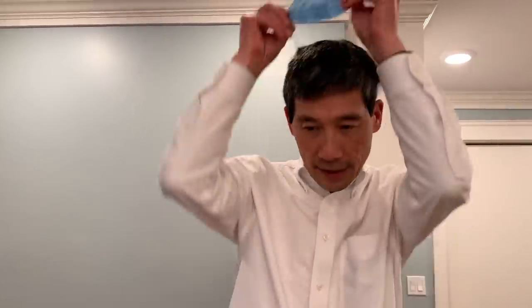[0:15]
In my day job, I'm a surgeon. And as a surgeon, I wear a mask like this. This type of mask protects my patients from my germs. I can use it in the operating room or in clinic. It could be a mask like this or a mask like this. But either way, these masks are to protect my patients from my germs.
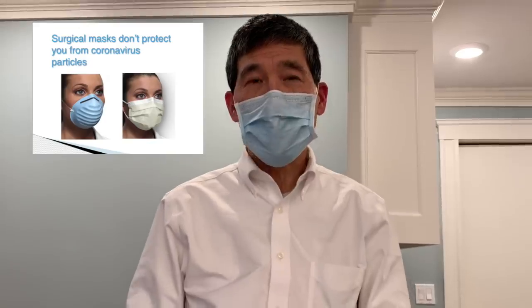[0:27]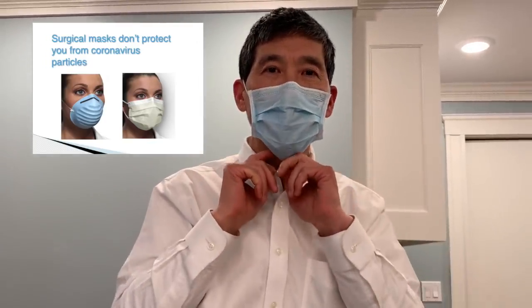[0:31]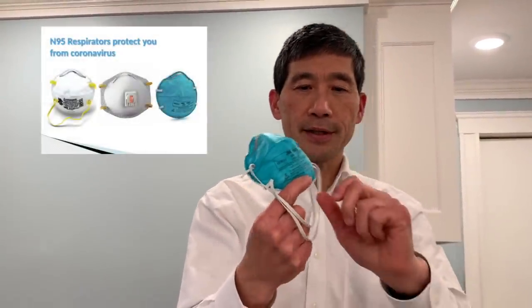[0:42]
This mask will not protect me from coronavirus for two reasons. The first is that there's a lot of air leaking in on the sides of it. And the second is that this isn't any special type of filtering fabric. If you want to protect yourself from coronavirus, you need a respirator like this. This is an N95 respirator.
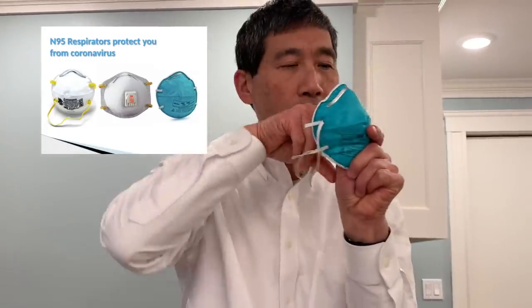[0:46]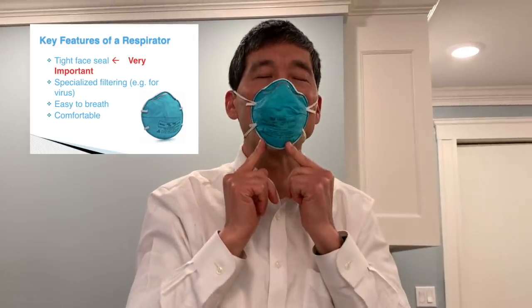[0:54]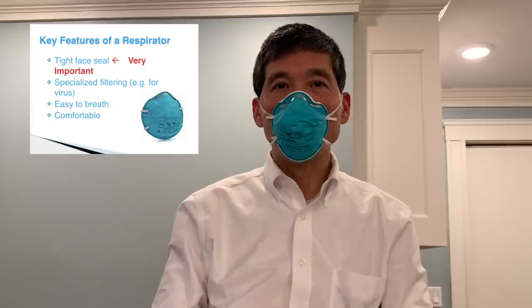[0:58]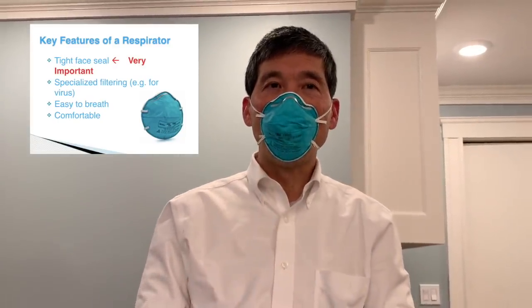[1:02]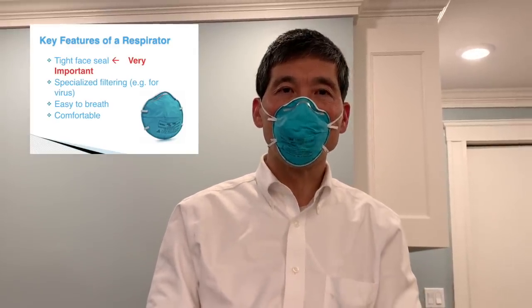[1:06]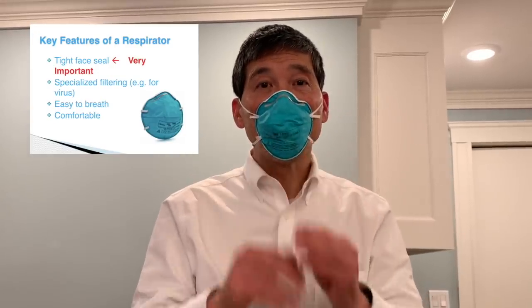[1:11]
There are several key features of a respirator. The first is that it forms a very tight face seal. This is very important. The second important feature is that this is a special fabric. This happens to be rated at N95, meaning that it filters 95% of particles that are 0.3 microns or larger. It's very comfortable, and I can wear it all day long and breathe in it.
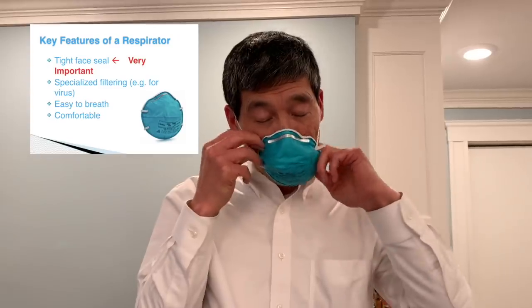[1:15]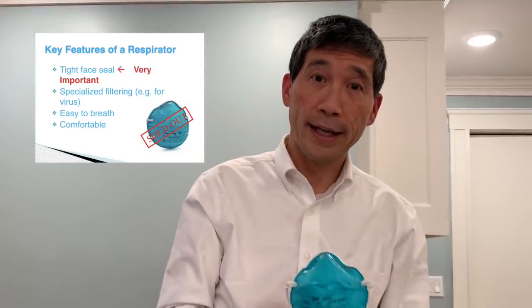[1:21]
What's the problem with an N95 respirator? The problem is that these are sold out. And so if you want to protect yourself with an N95 respirator, you need to figure out how to make your own. So if you want to make yourself an N95 respirator, do it yourself, this video is for you.
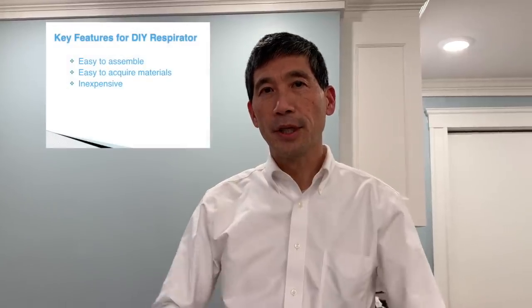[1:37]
The key features of a do-it-yourself N95 respirator are that it has to be easy to assemble, the supplies need to be easy to acquire, and it needs to be inexpensive. Here's a do-it-yourself N95 respirator that makes a tight seal against the face and has a special fabric here that filters 95% of particles, 0.3 microns or larger, and the mask is very comfortable. I'll show you how this is made.
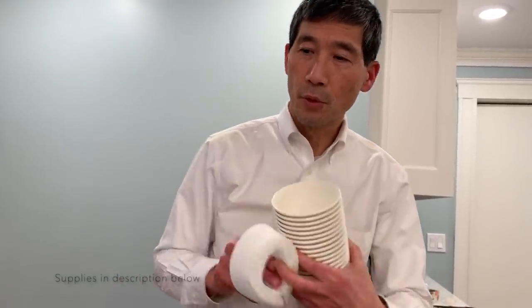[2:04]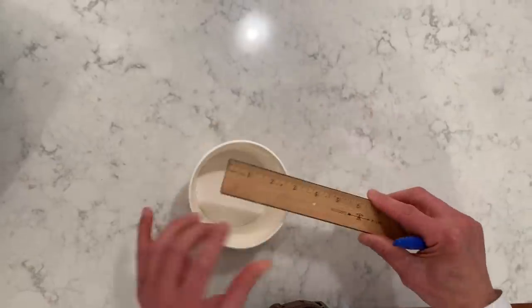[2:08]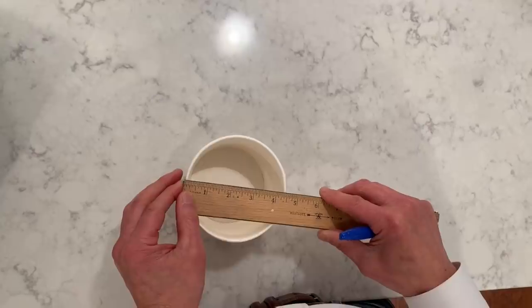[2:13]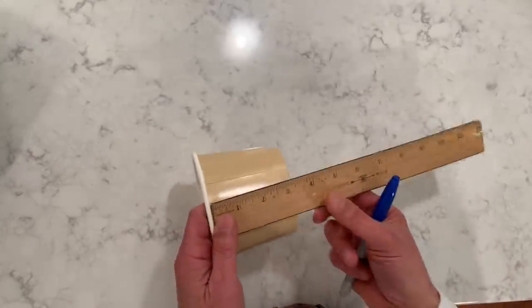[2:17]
The key things that you need for this project are some soup cups, 4 inches in diameter is the best, some foam, and some saran wrap. This is a soup cup. Its diameter is just a little bit larger than 4 inches, about 4.5 inches. And the height of this is about 3.5 inches.
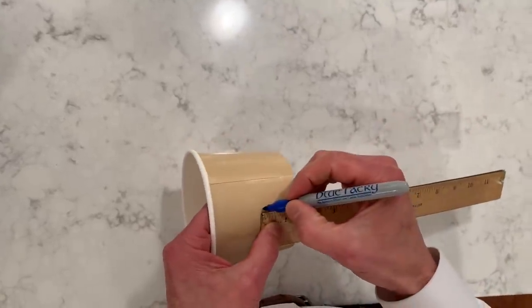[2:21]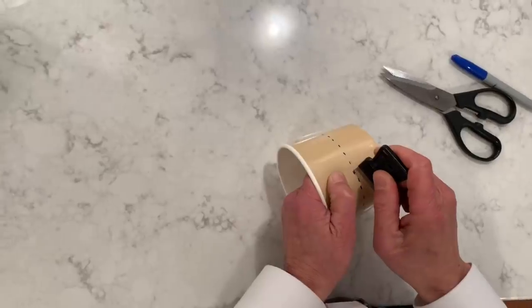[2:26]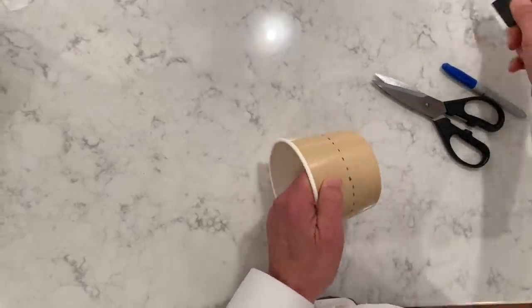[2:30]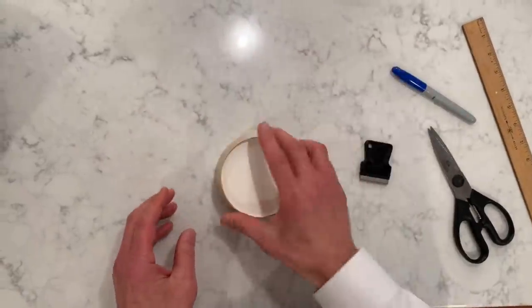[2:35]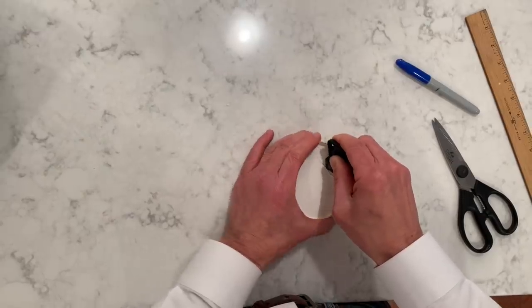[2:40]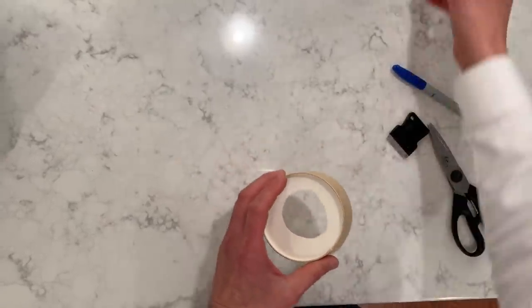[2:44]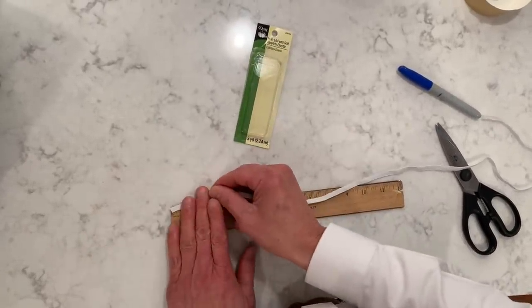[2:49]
It's important to cut it down to only about a 1.5 inch height. So I'm gonna measure 1.5 inches all the way around this cup. And then we'll cut all the way around here. After you've finished cutting, this is the part that you want. We're going to cut out the center portion of this where our filter is going to go, like so.
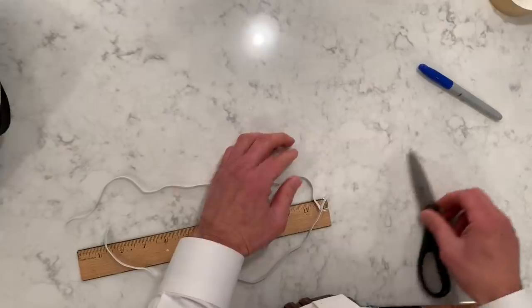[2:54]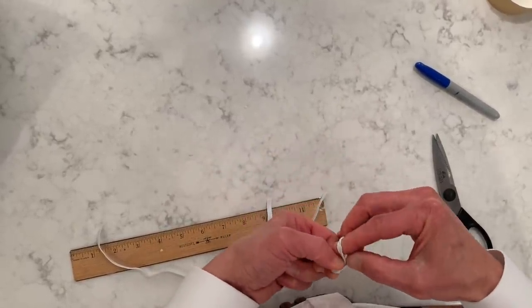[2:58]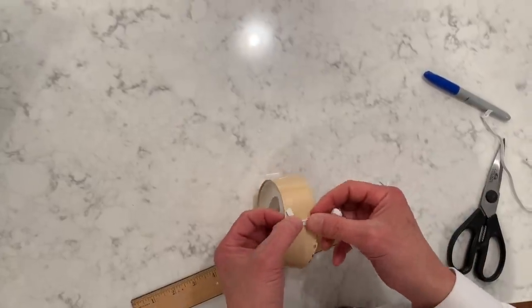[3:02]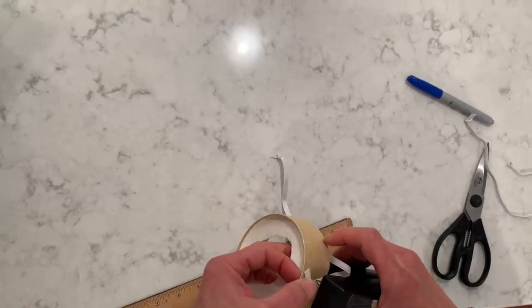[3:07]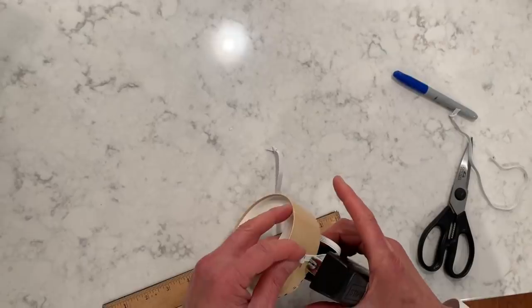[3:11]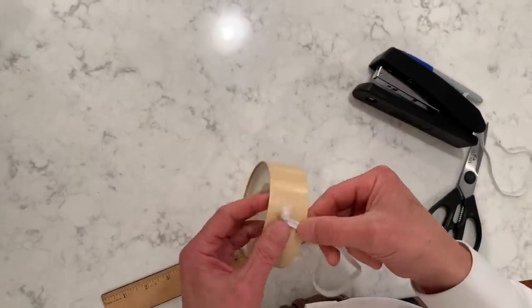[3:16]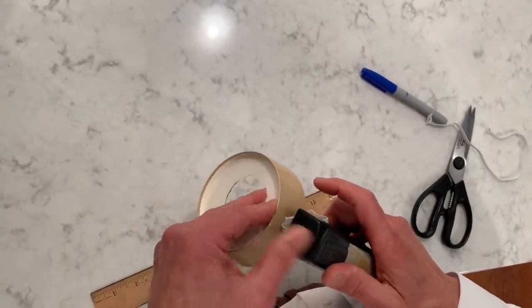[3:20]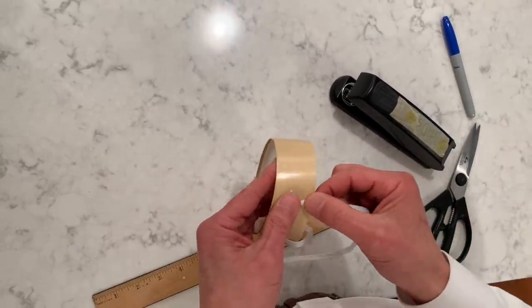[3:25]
Next, we're going to take some 1/4 inch soft stretch elastic fabric and cut about 13 inches. We need to put a knot at the very end of it on both sides. Next, we're gonna secure our straps on here with a stapler. I'd recommend 2 staples. And the bottom strap.
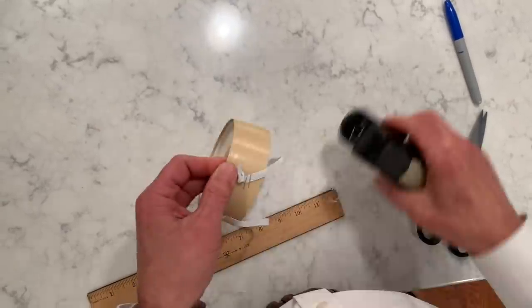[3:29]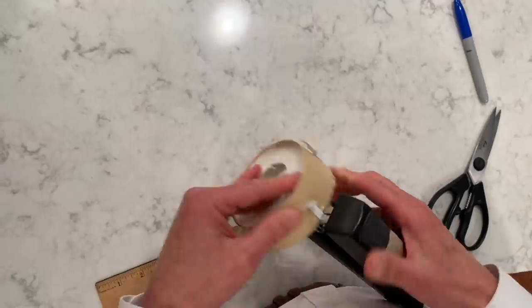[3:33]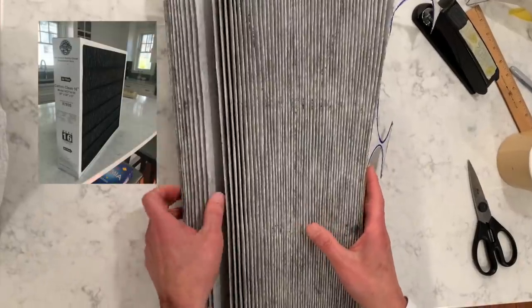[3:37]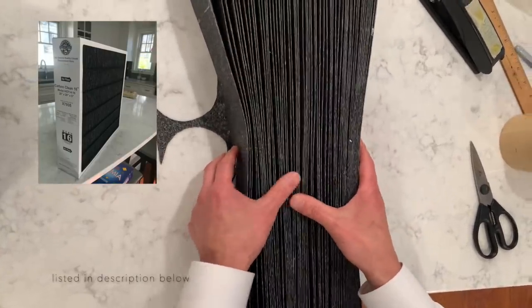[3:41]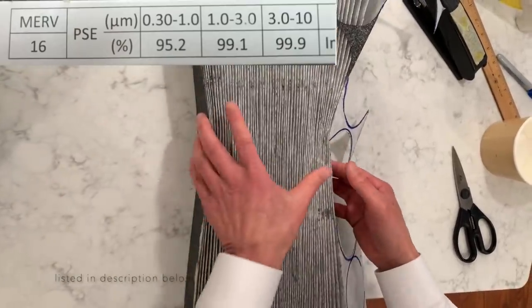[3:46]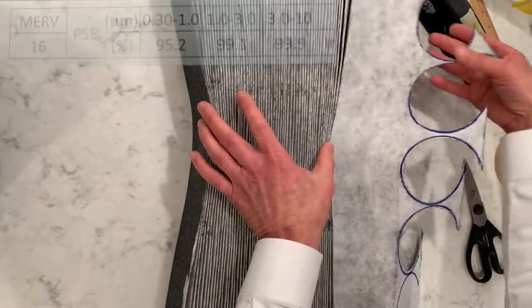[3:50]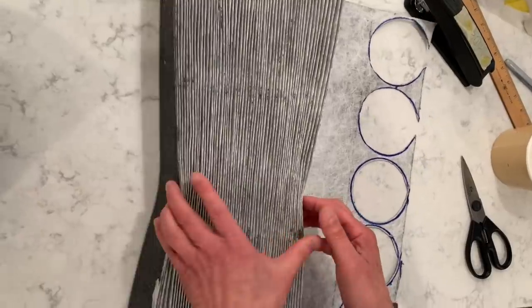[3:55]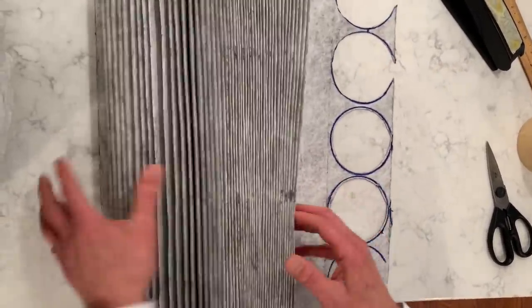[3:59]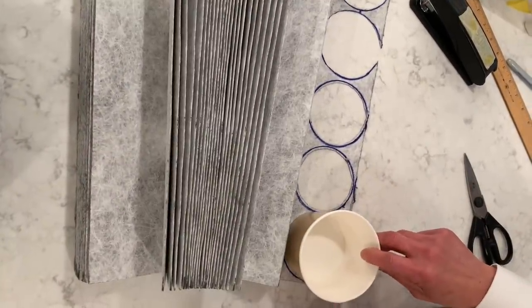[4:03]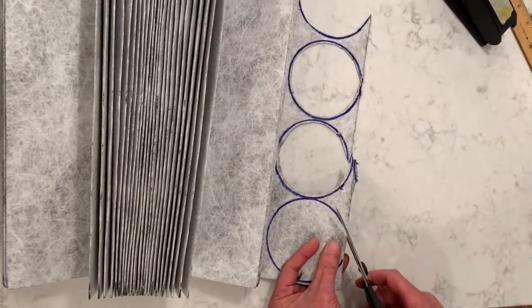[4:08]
Okay, next we're gonna use a filter from HVAC, an air conditioner filter. This is MERV 16, which has the exact same ratings as N95, meaning that it filters 95% of particles, 0.3 microns and larger. Once I've disassembled this filter for an air conditioner, there are so many pleats in it. There's actually 119 pleats in it, and we're gonna cut our filters out of this. You can see I've already made the circle around for the size, and now I'm gonna cut this out.
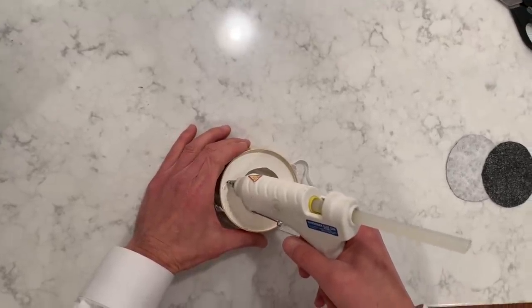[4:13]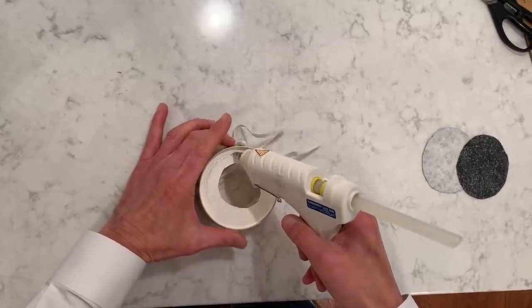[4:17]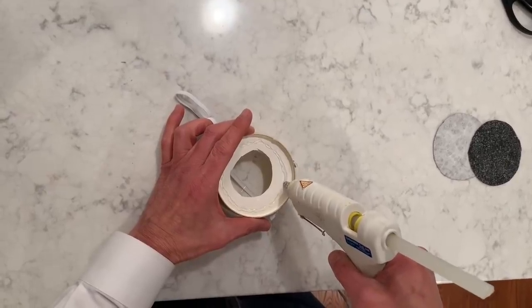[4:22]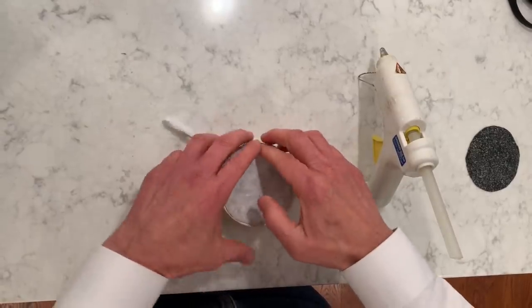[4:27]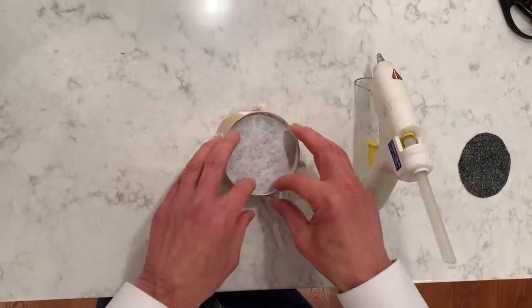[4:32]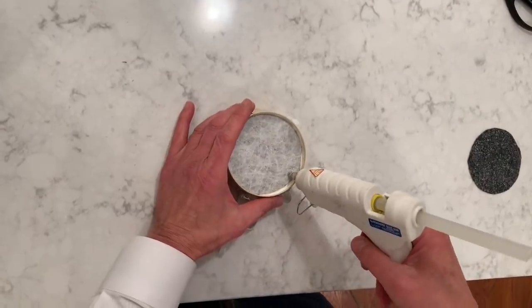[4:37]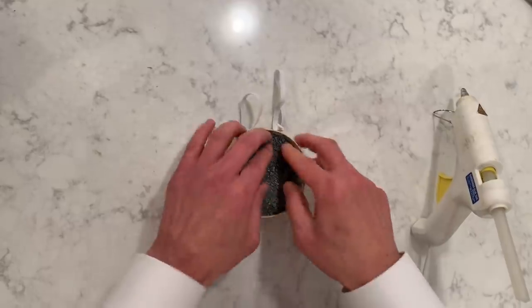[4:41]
Next, we're gonna glue the filter in place. I'm using a hot glue gun here. Liquid glue will also work. It's important that the bead is continuous so that there are no air leaks. Put down the first filter. Now I've got this with the microfiber side up, and one filter would be sufficient. But just to be safe, I'm going to use 2 filters. Second filter. So that's 2 layers of the MERV 16 filter.
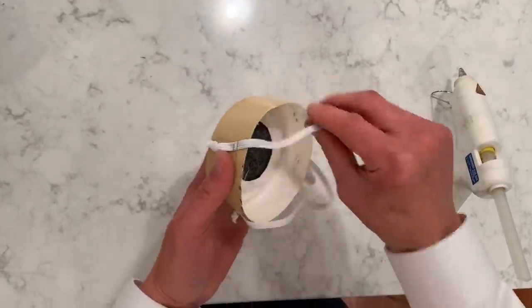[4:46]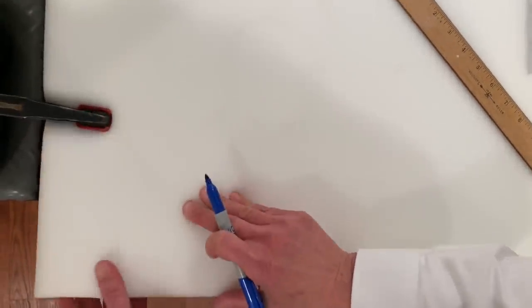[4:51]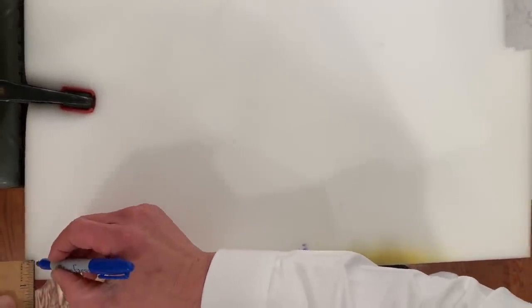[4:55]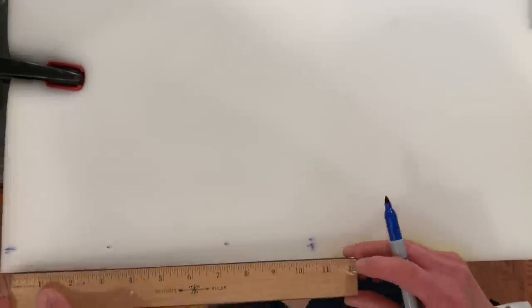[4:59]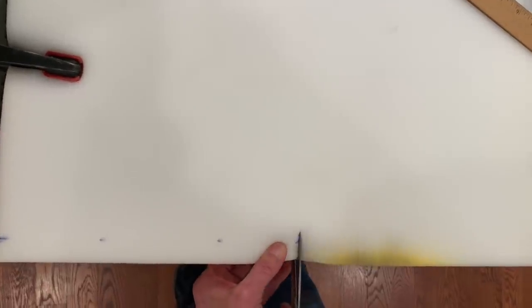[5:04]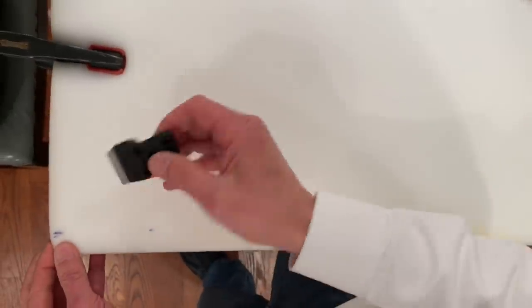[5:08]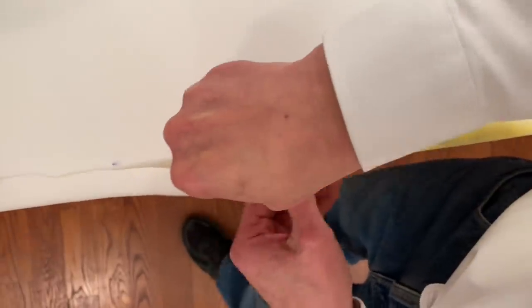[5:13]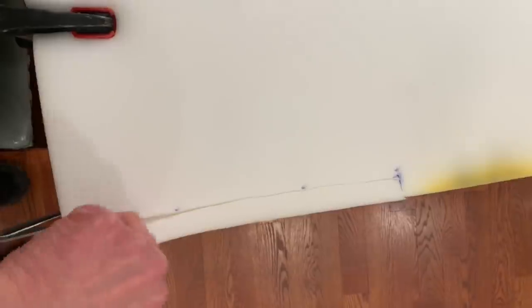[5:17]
The next step is to create the face seal. This is a sheet of 2-inch thickness foam that I got at Home Depot. I'm going to measure a strip here that's 3/4 of an inch wide and needs to be 11 inches long. I cut the end of this here. And then use a razor blade to cut the foam. And once you're down that far, it's easier to use scissors.
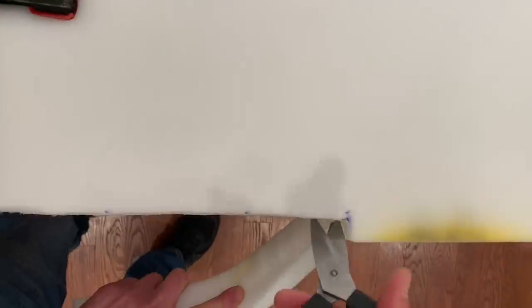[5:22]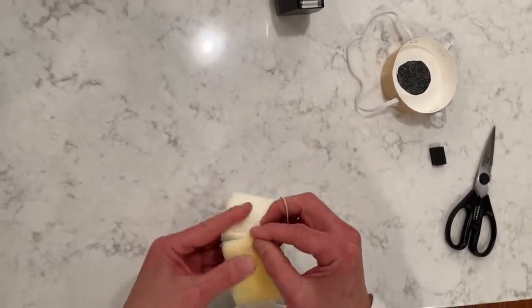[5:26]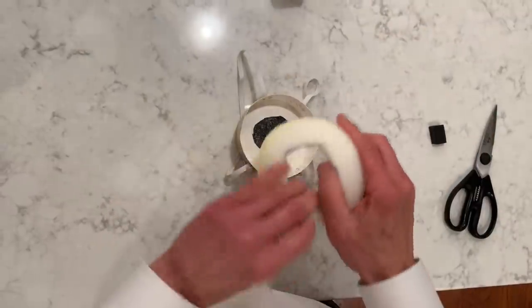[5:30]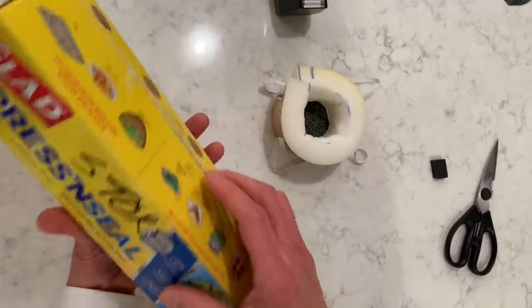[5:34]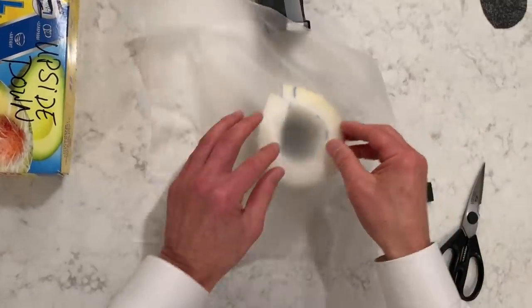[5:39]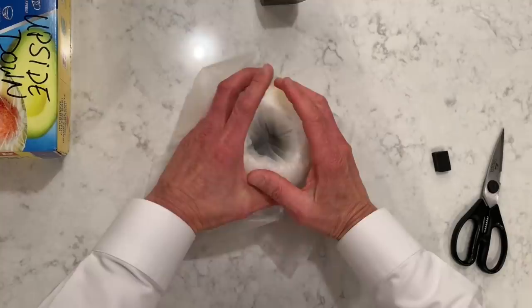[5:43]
Now that you've got your foam cut out, make a circle and hold that circle in place with a rubber band. Go ahead and put it inside of the shell of your respirator. Get a sheet of saran wrap. Place it over. And put it down in the center like that.
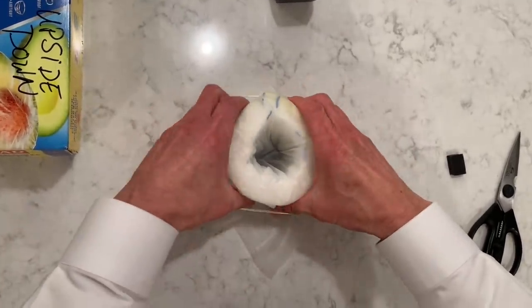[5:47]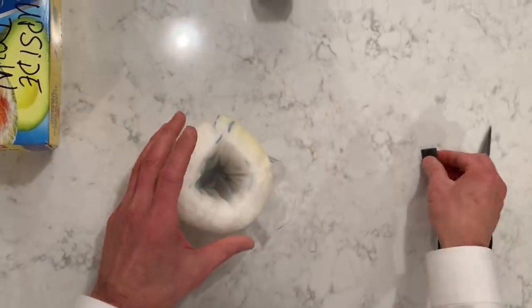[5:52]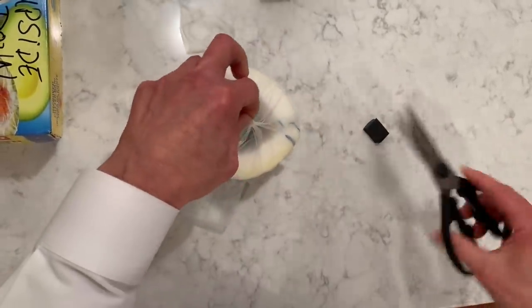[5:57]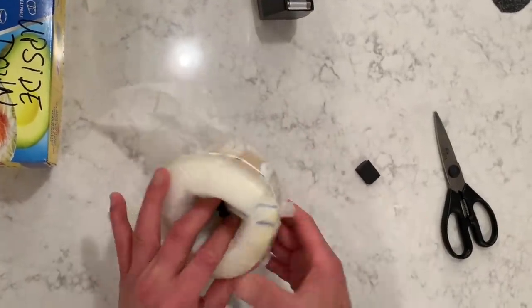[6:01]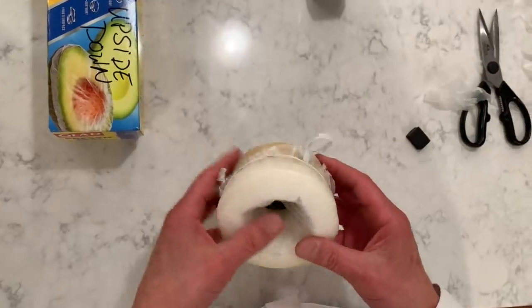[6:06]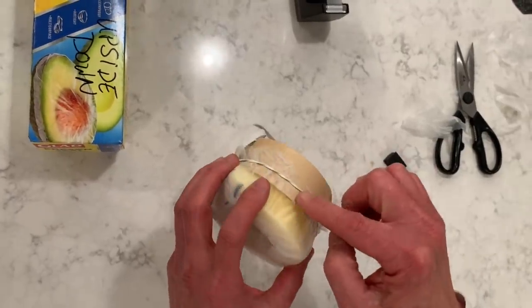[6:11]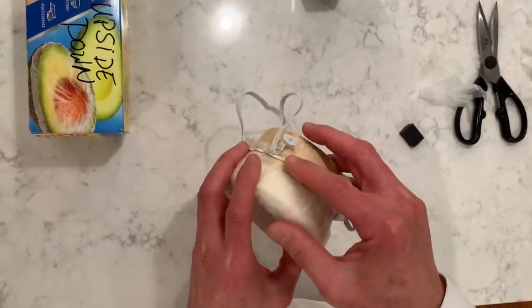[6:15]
And place a rubber band over it. Take the very center of it, cut just a very small hole. Push down. To make it look nice, you can cut off the extra saran wrap. Now that I've cut off the extra saran wrap, I just want to go around and make sure the rubber band is sitting on the saran wrap itself and hasn't rolled down too far. But that's it, that's our completed respirator.
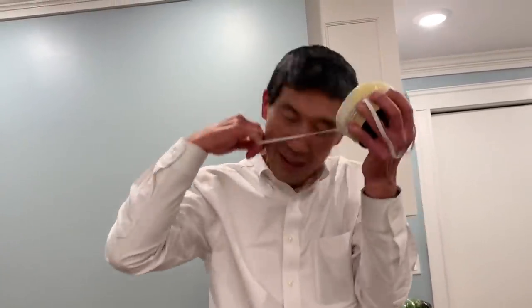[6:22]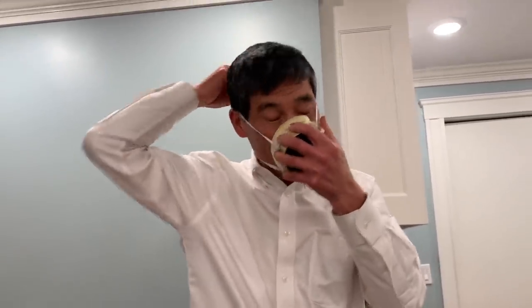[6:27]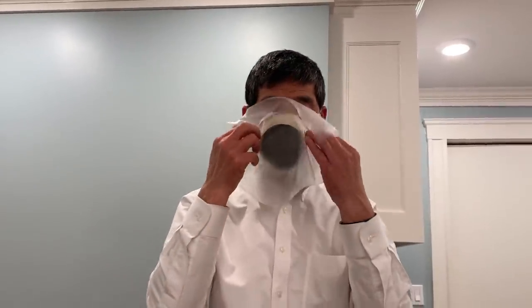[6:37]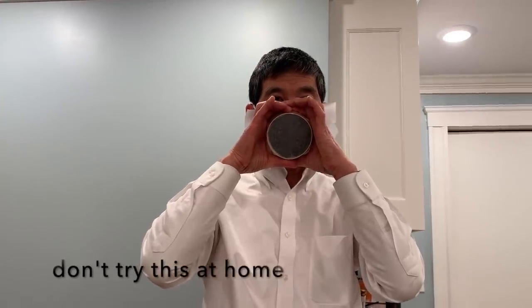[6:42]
Okay, let's go ahead and fit test our respirator here. I'm gonna put it on, get a nice seal against my face. I want to be able to test the seal, so I'm going to get a piece of saran wrap here and put it over the filter side. And I cannot breathe in any air at all. And so I can tell that this is an excellent fit on this respirator with a great seal all the way around.
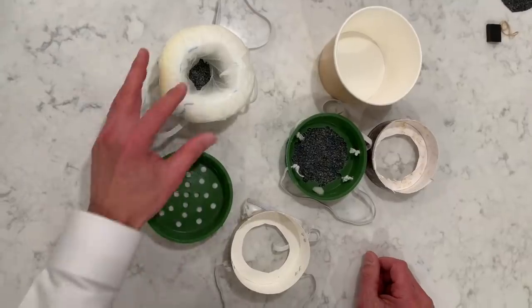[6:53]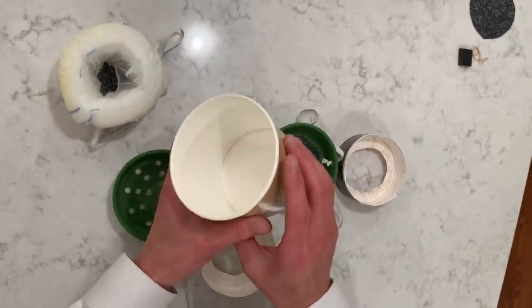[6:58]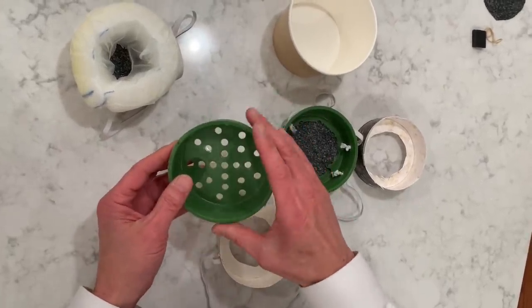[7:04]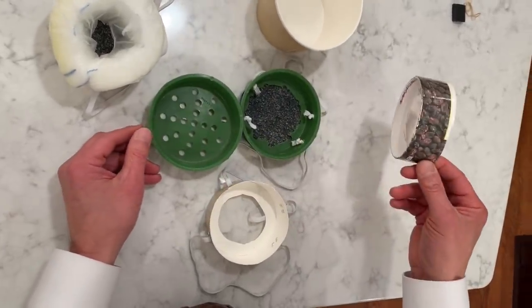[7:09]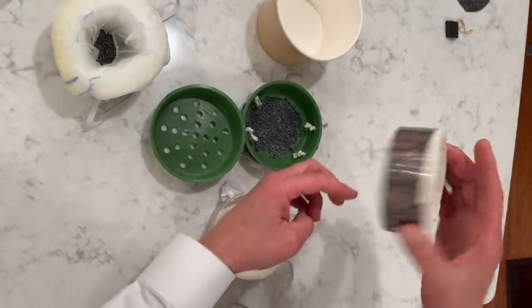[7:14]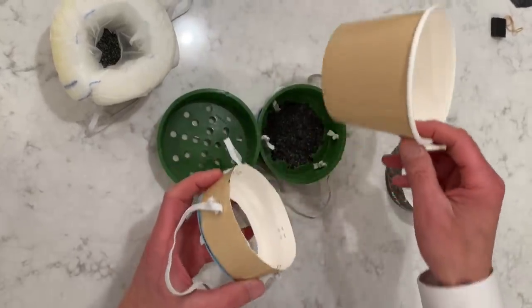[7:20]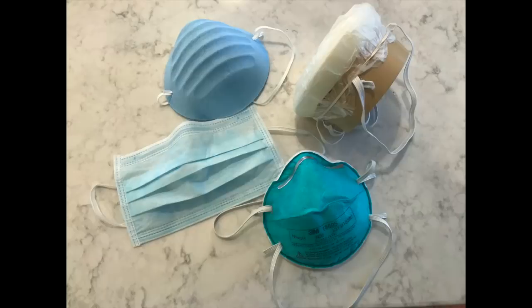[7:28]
There are a variety of materials you can use to make your respirator. I used these type of soup cups. This is an end cap for a drain plug, perforated, from Home Depot, and that works well too. This is the bottom of a carton of raisins that was cut, and you can cut out the bottom and that would work just as well. This is the bottom cut from this cup here. So if you're unable to get your hands on one of these N95 respirators, you can make your own N95 respirator that is very effective.